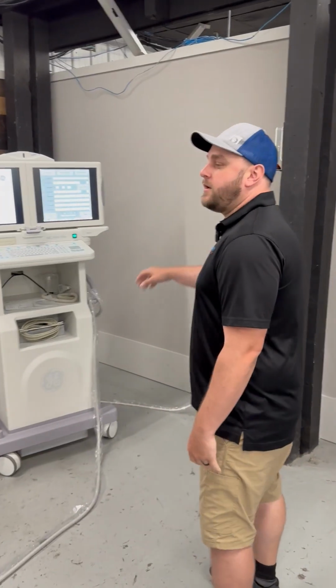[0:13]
Hey guys, this is Matt with Black Imaging, and today I'm going to be showing you how to do a battery replacement on a generator of an OEC C-arm.
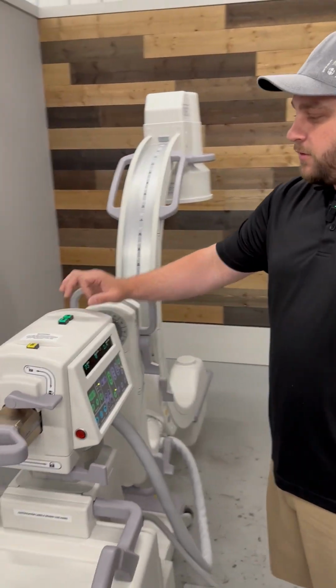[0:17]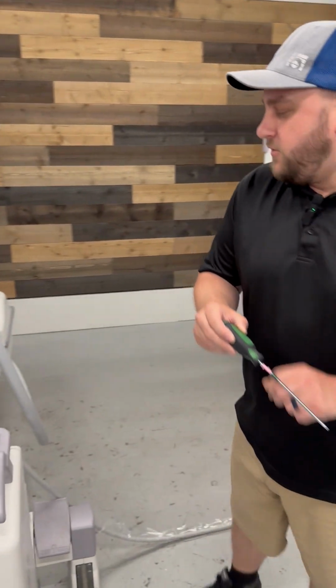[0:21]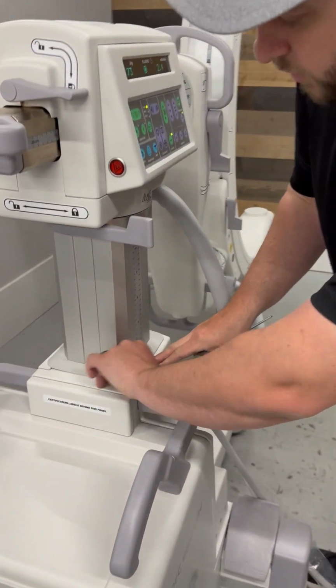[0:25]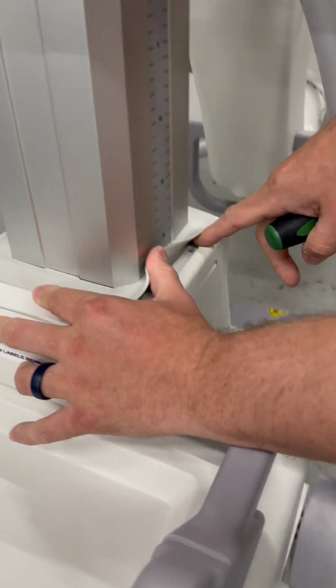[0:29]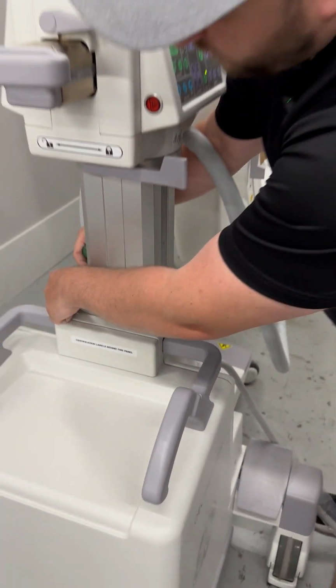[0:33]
With our system on here, to make it easy for myself, I'm going to go ahead and raise my vertical column by pushing the up button, and then using a T20 Torx screwdriver, we're going to raise this rubber seal right here that's hiding two screws on each side, which I've already removed for easy access. Two on that side, and then two on this side.
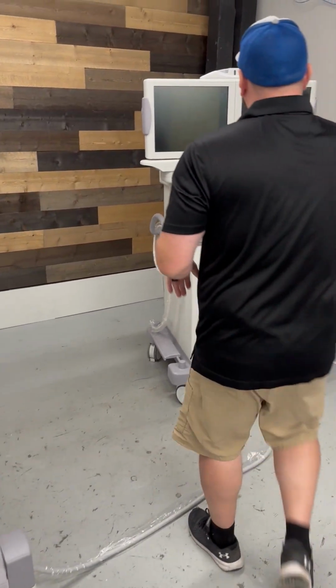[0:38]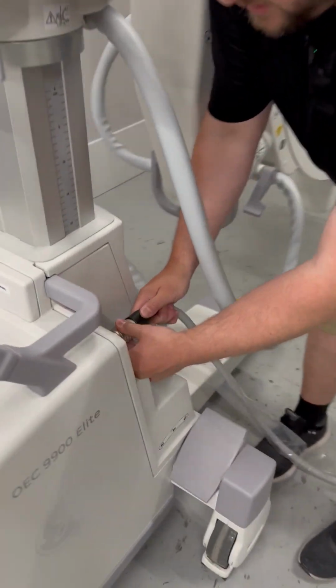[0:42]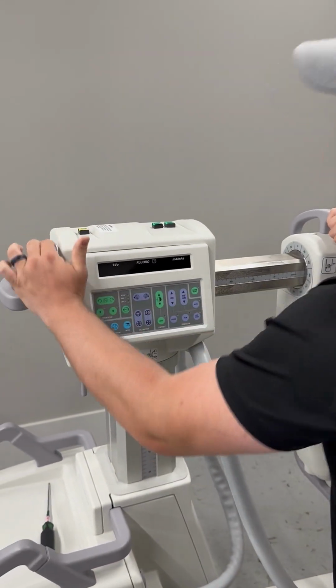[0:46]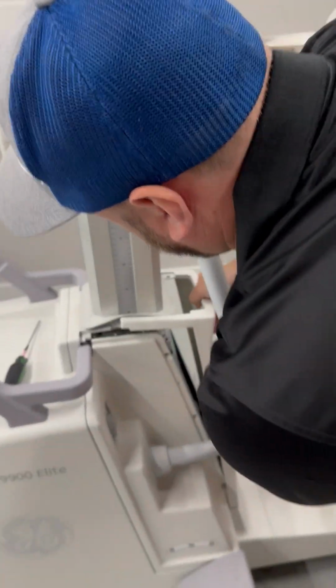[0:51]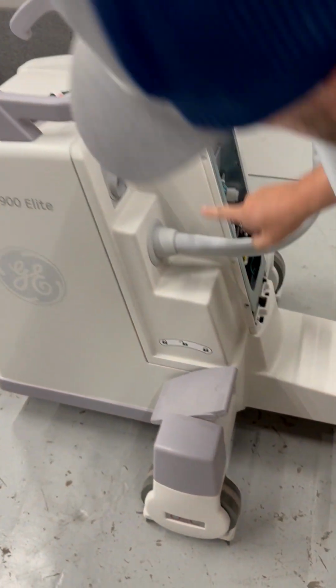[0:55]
Now that I have that removed, we can go ahead and power our system down, and then we'll go ahead and remove our interconnect cable. I like to have my cross arm positioned out in the outermost portion to give me a little more access as I remove this front cover. And then this cover where our interconnect cable goes, there's three screws located here, which I've already removed for ease.
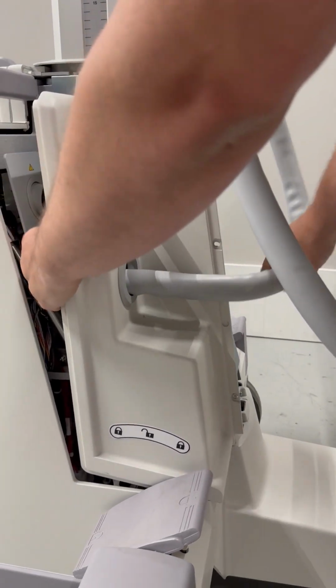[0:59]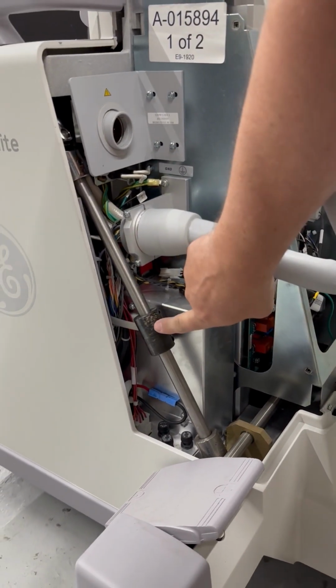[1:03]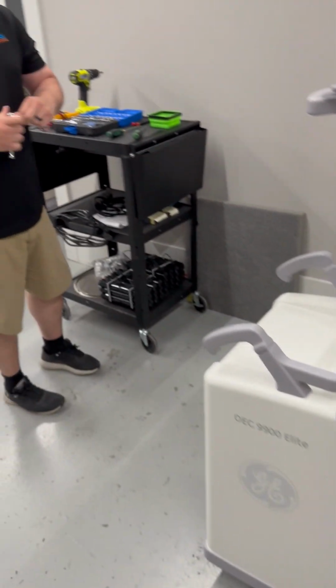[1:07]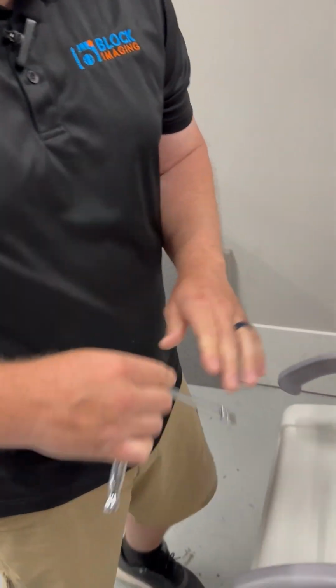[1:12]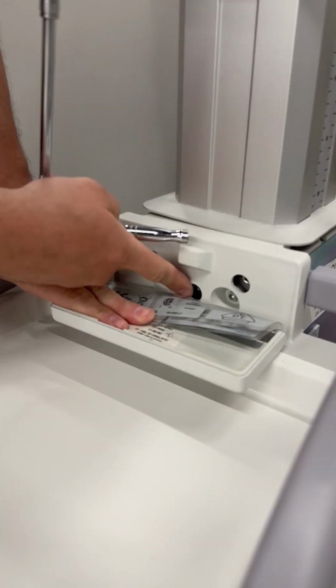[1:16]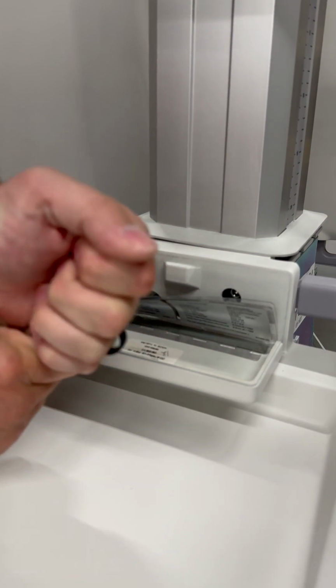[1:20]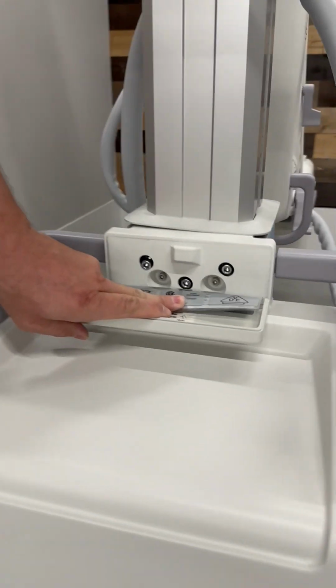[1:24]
And that's going to be exposing our steering shaft here with the knuckle. And then what you're going to want to have is a 1/4 inch Allen. Open up this access panel, and there's three screws located inside here. We're going to want to loosen those up and remove them. Now, I like to keep the screws in there just so I don't lose them. You can button that back up.
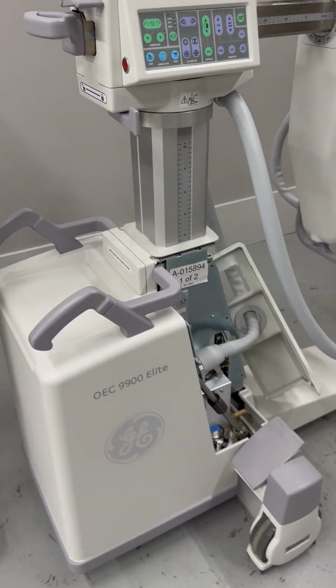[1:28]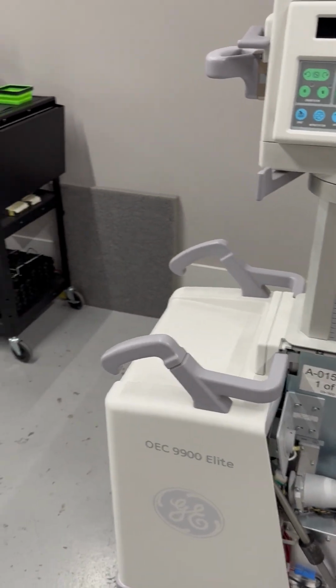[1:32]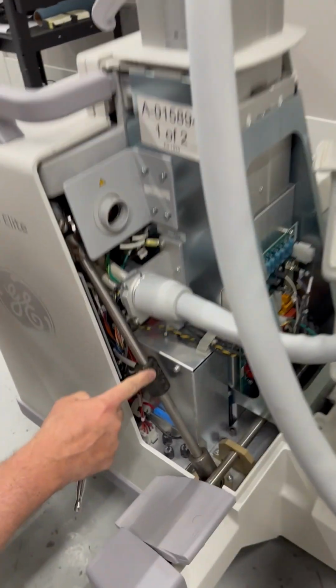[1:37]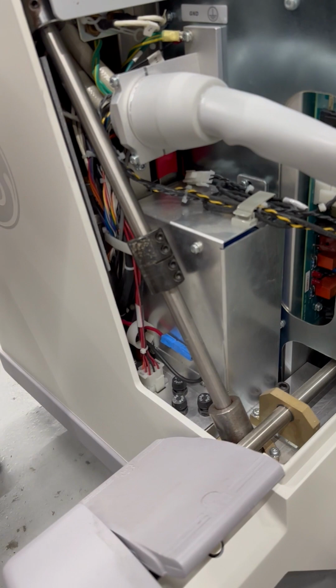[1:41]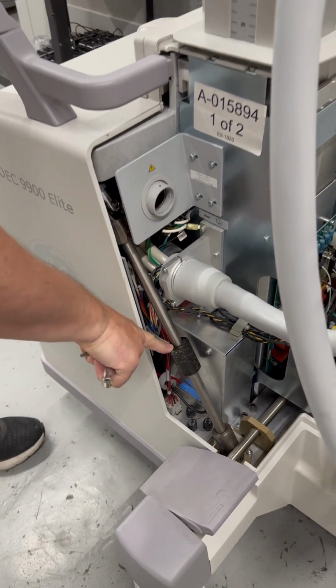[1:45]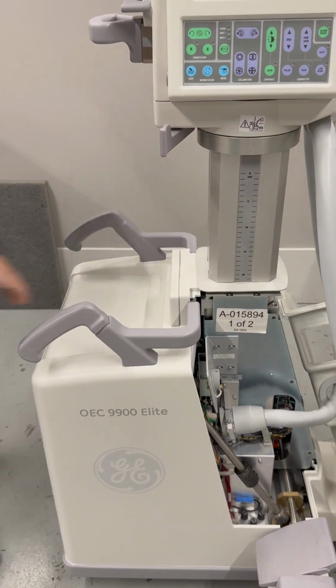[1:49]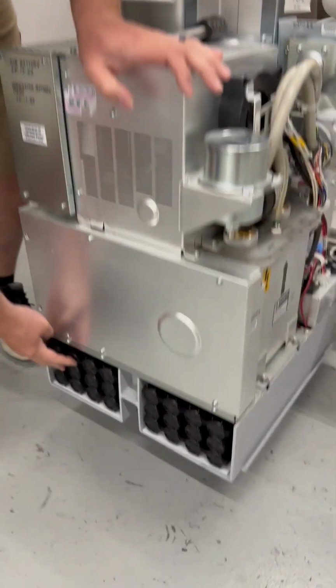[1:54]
Now, where that knuckle is, we will need a 5/32 Allen. And there's four screws located on there. We only need to loosen up the top two. And that should allow us to freely move our steering shaft from the knuckle. At that point, we can pull the generator cover out. And that's going to expose where our battery compartments are.
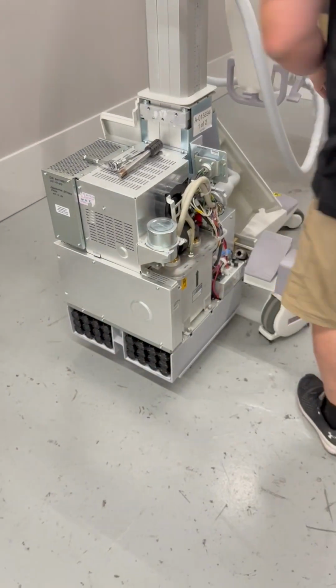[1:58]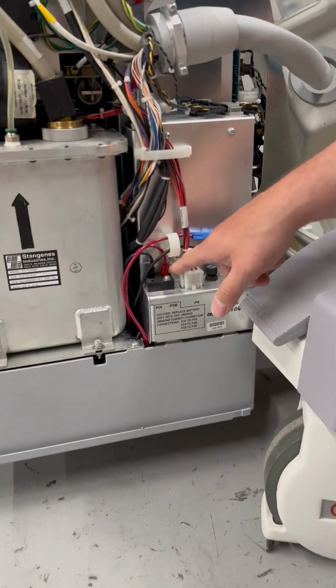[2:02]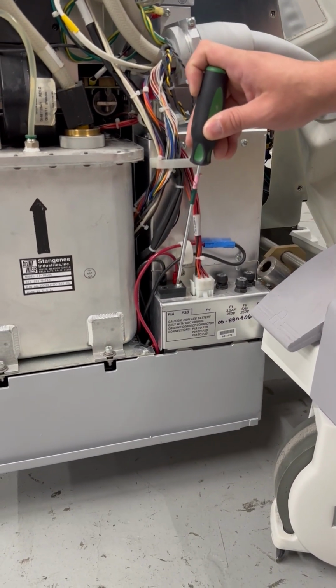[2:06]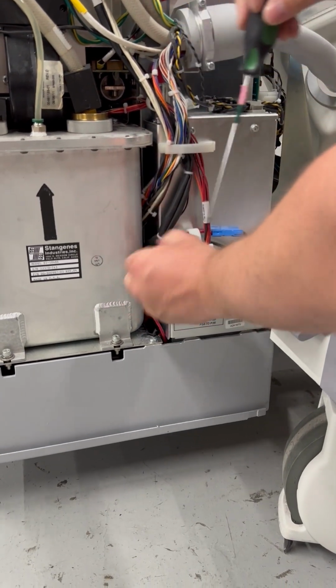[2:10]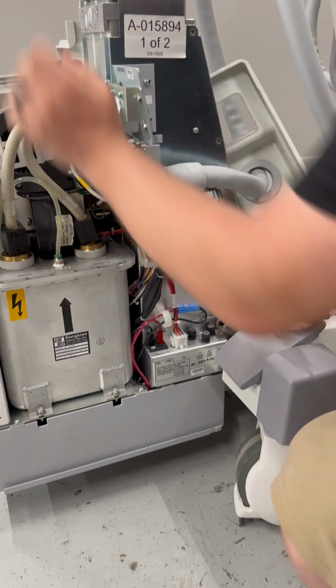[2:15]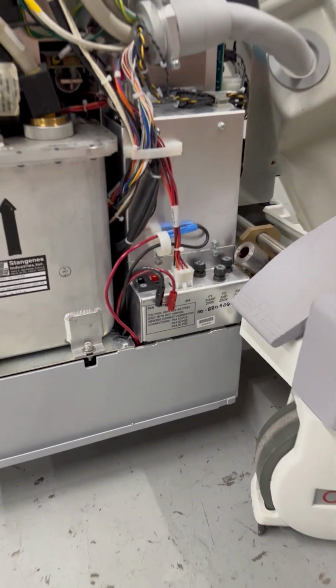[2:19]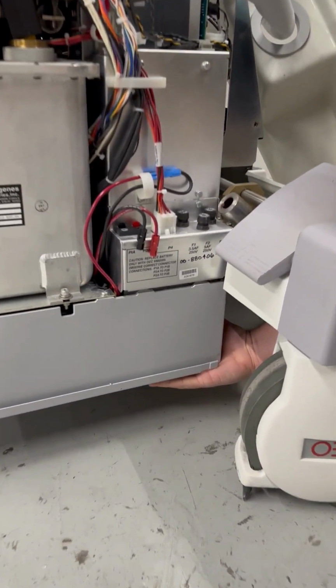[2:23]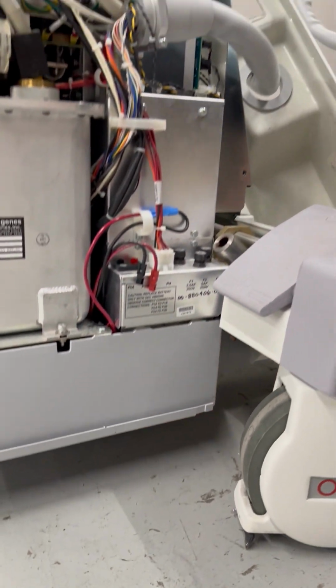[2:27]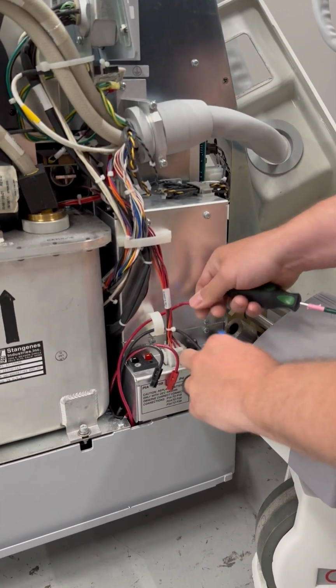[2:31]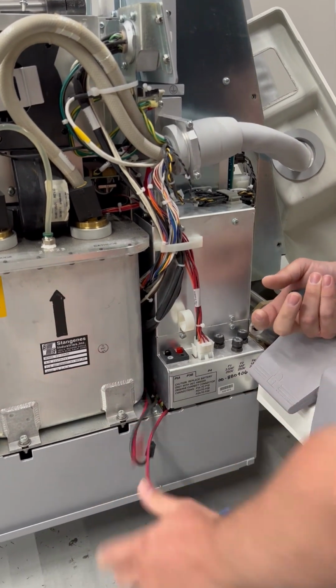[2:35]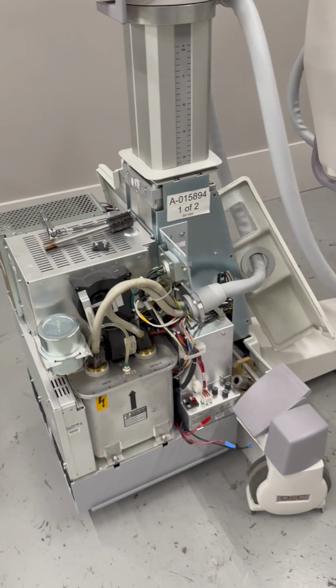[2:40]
You'll have two batteries. On the side here, on your capacitor module, you're going to have where your batteries plug in. There's going to be a retainer with one screw that you will need a T20 Torx screwdriver for. Go ahead and remove that retainer, and you can unplug your batteries. While you're doing this, there is a circuit breaker on the underside that you should turn off. Now all four connections are just connected, and we can go ahead and pull our batteries out.
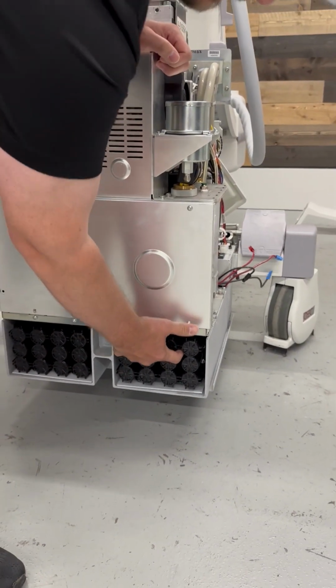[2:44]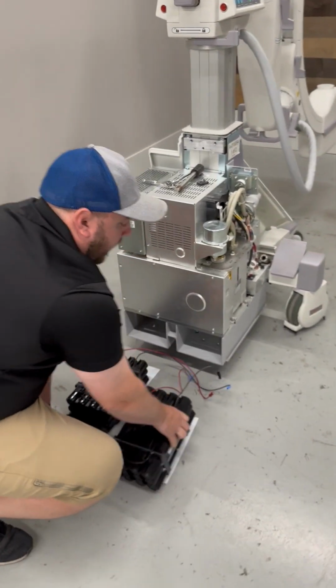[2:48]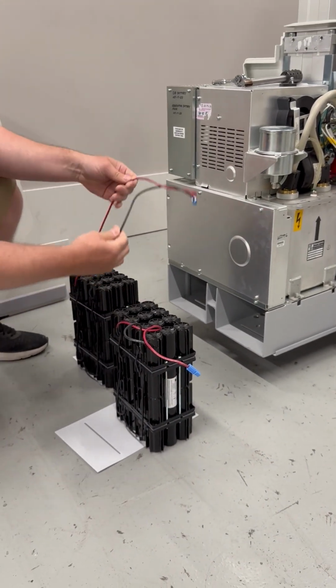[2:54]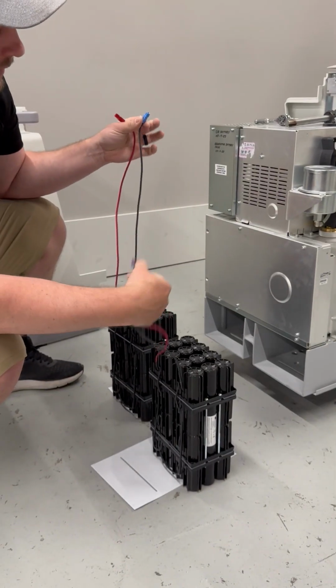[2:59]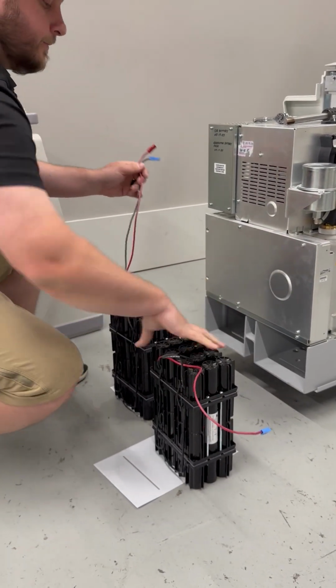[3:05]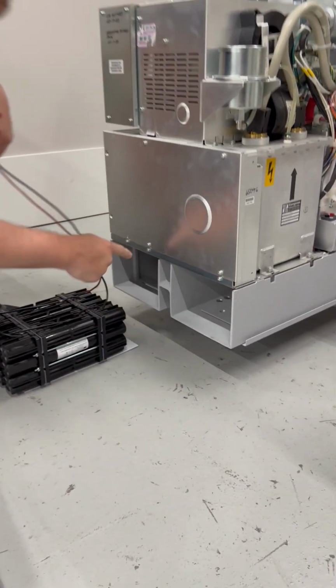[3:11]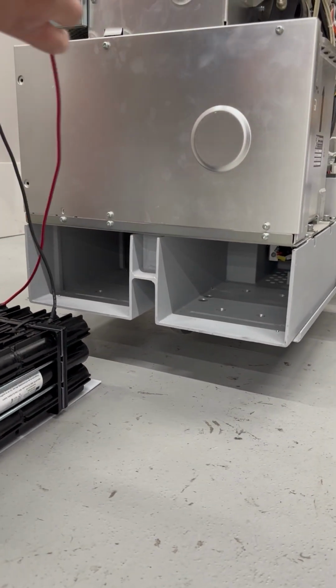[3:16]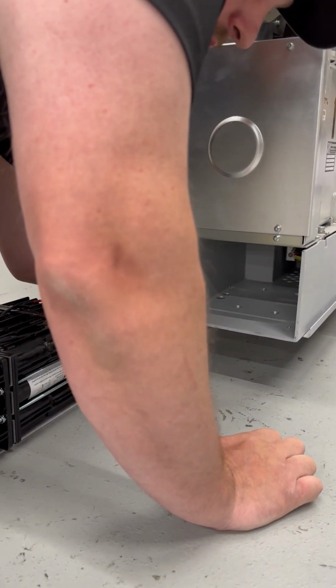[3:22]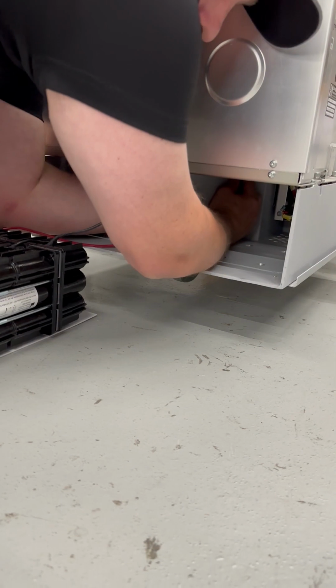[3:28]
Now in this example, I'm just going to go ahead and put the exact same batteries that we just had in there. What I like to do is stand them up to check the lengths of my battery wires. The longer side is going to go on your left cavity, and the shorter side on your right. Now in between these two cavities, there's a pass-through hole that runs from this side over to this side in the very back corner. So what you're going to have to do is take these two long connections and feed them through that hole to be able to pull through the other side.
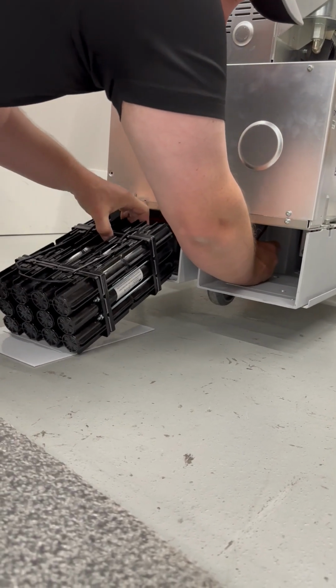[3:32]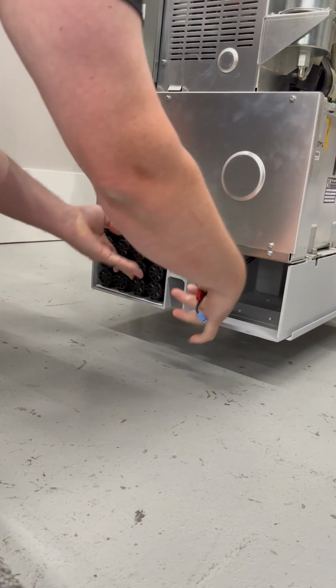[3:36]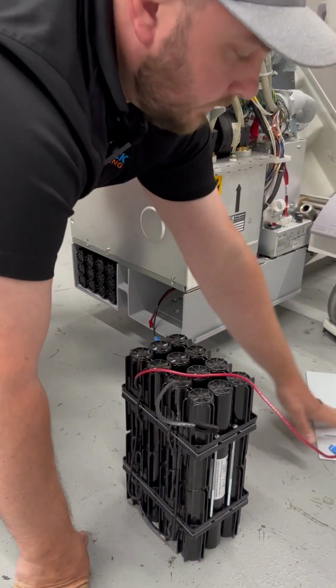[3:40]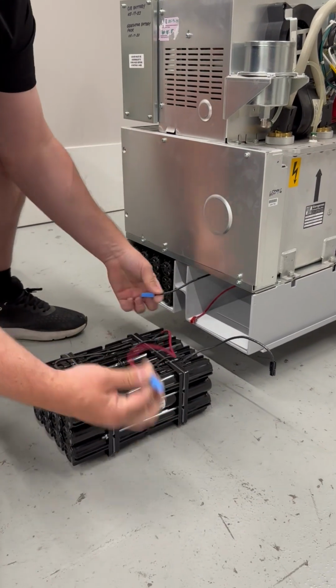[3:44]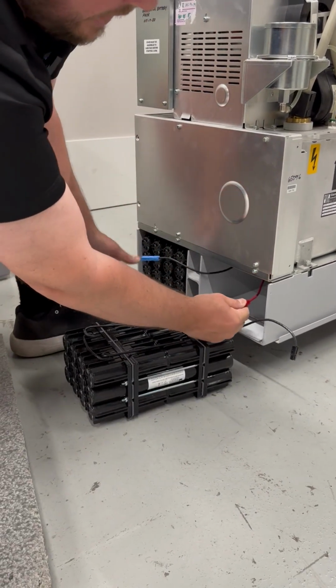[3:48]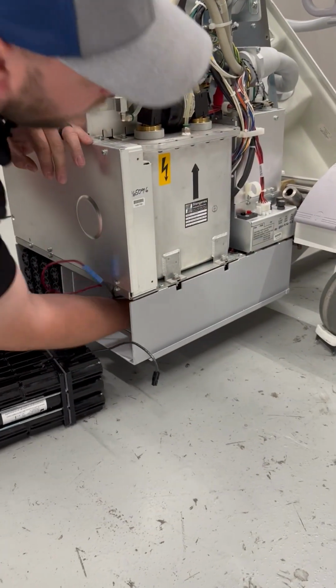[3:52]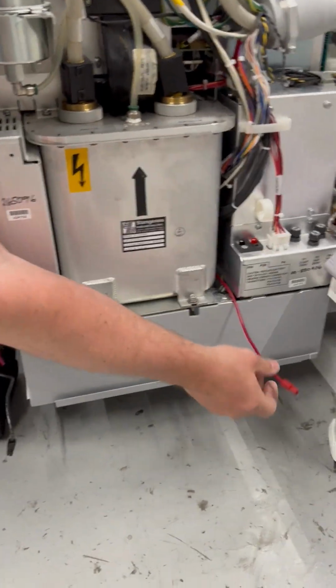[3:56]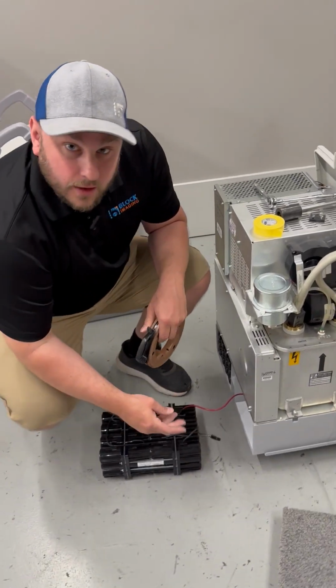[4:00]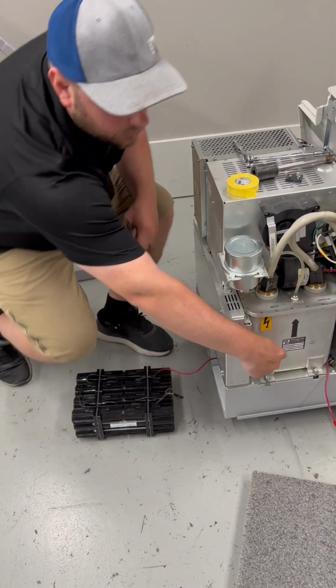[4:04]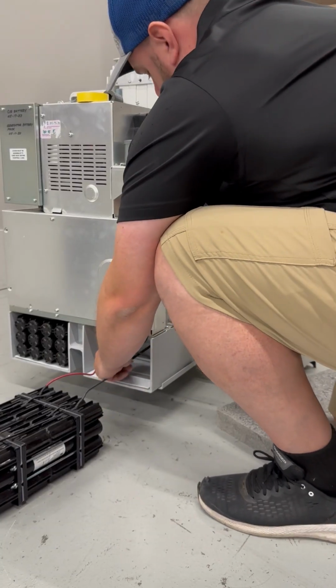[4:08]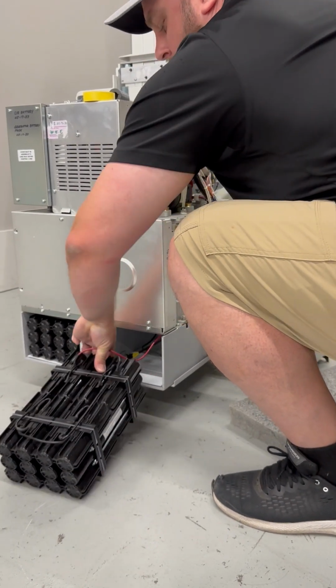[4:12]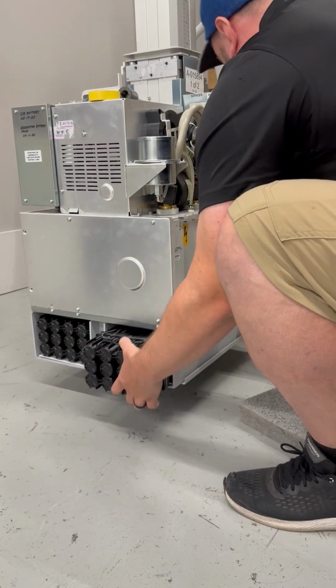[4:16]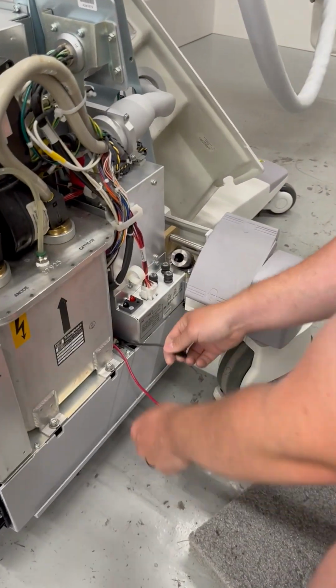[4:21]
Once you have a hold on them, you can go ahead and put your battery back in here. Grab a hold of your connections and work on your right side. You're going to go ahead and connect your blue-red to your blue-black wire. And this red wire that's already in the cavity from the left battery, you're going to pull it back up through that hole where our retainer was. So with this particular battery, it has a shorter black lead, so I'm going to have to put some fish tape through this side to try and pull this wire through. Once you have it taped together, you can pull your battery back up in this compartment, slide it in, pull your wire through there.
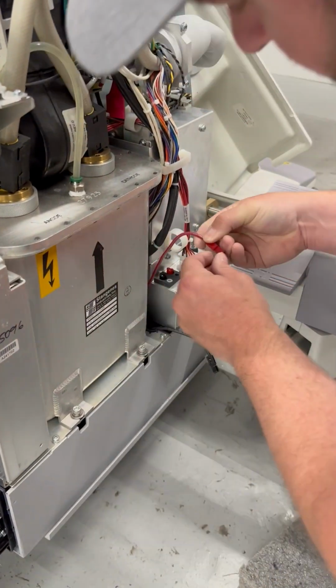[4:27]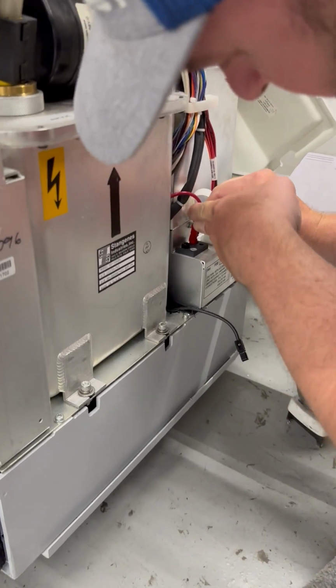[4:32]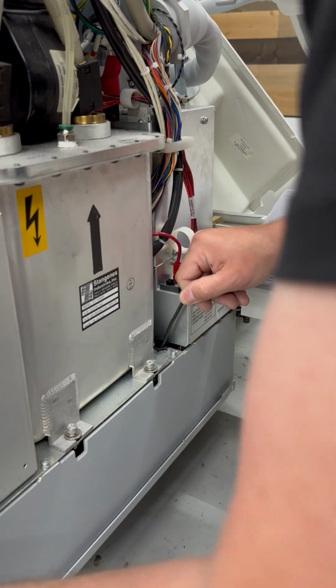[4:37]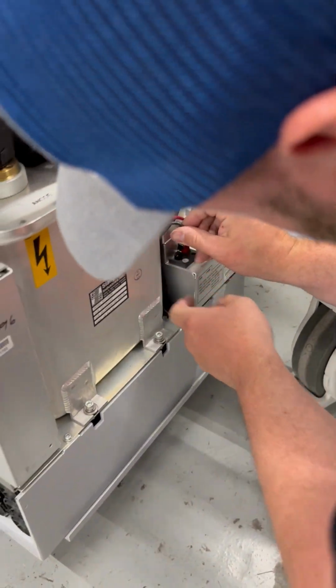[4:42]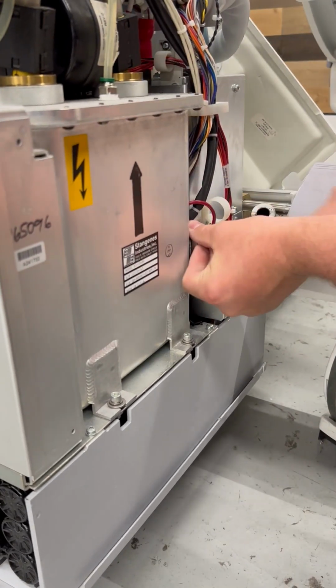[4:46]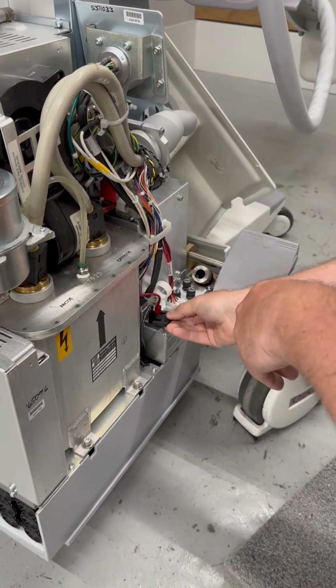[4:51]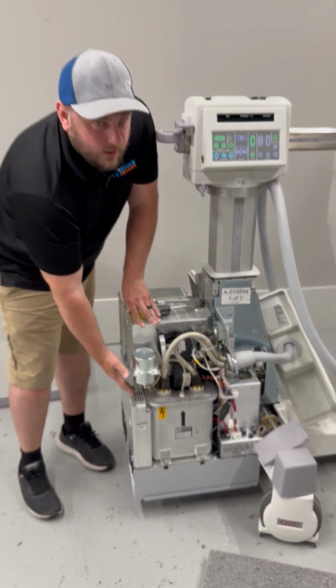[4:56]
And what you're going to want to do is go ahead and connect your red connector on your battery capacitor module. Plug in your black wire. Once you have those both plugged in, we can replace our retainer. Now that completes the physical installation of the batteries itself.
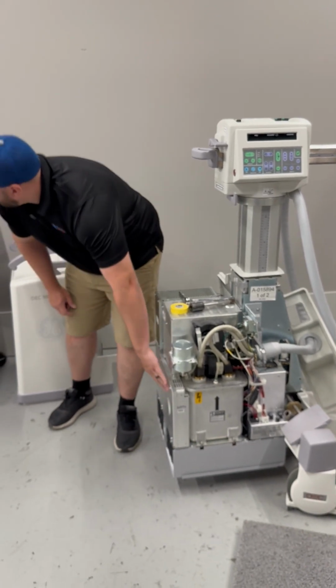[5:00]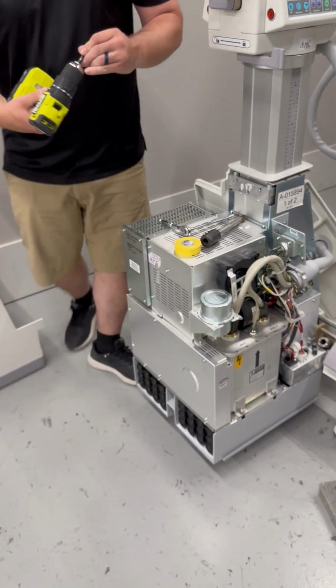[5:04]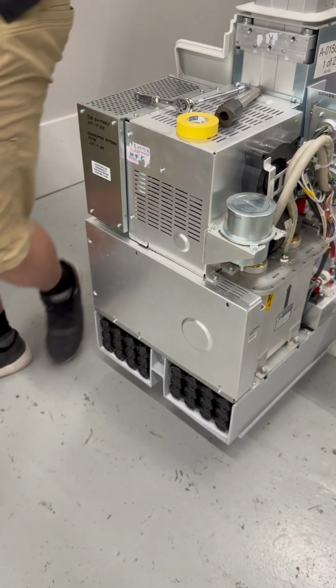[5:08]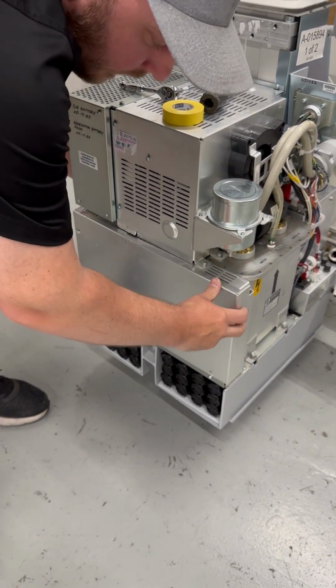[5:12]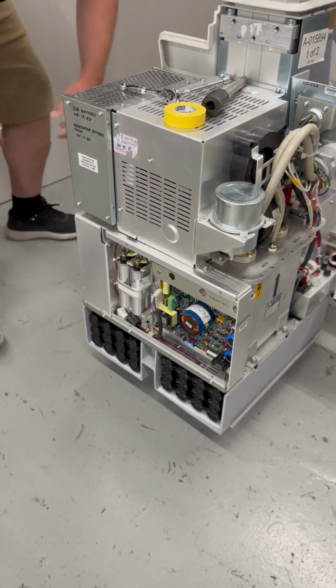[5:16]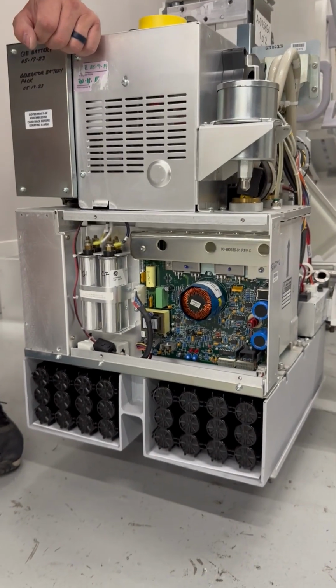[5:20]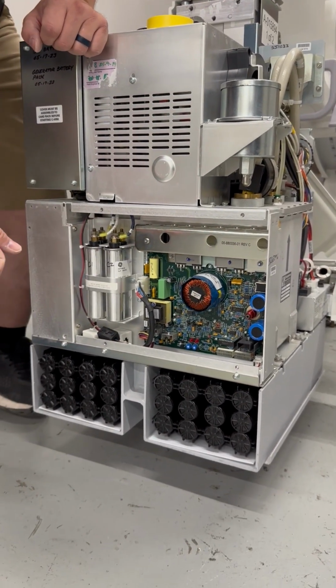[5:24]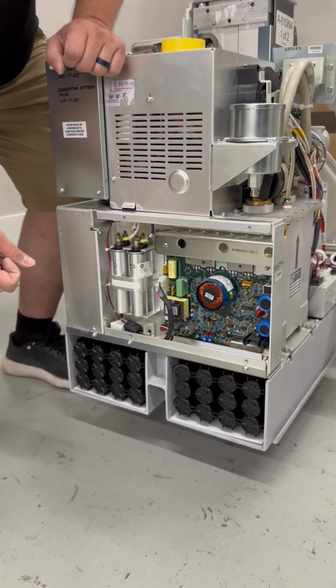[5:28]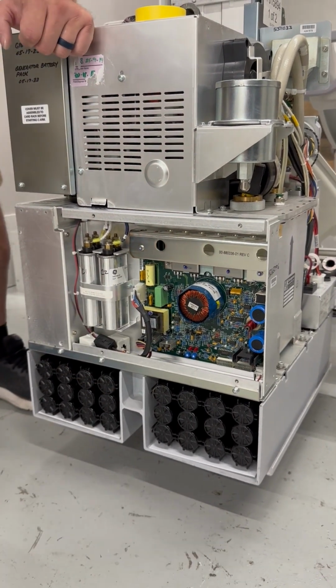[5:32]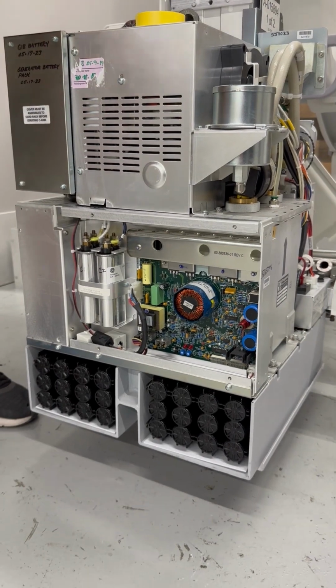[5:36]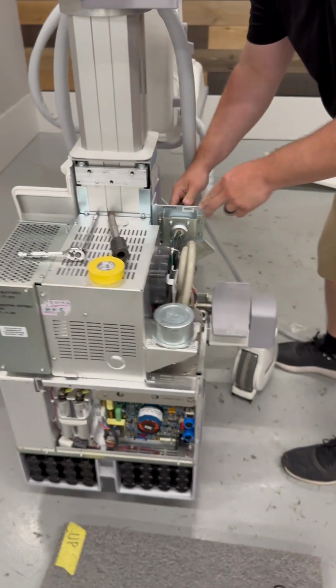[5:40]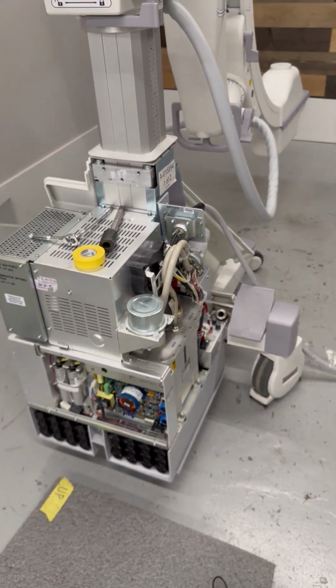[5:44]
Once you have the batteries replaced, you're going to have to remove this cover right here to expose our battery charging board. Once you have all the screws removed, you can remove the cover, exposing our battery charger board. In this particular case, we have a blue battery charging board. There's also a green variety. They calibrate the exact same way. They just have different trim pot labels, and the test point is located in a different spot. Now we can go ahead, reconnect our interconnect cable, and power our system back up.
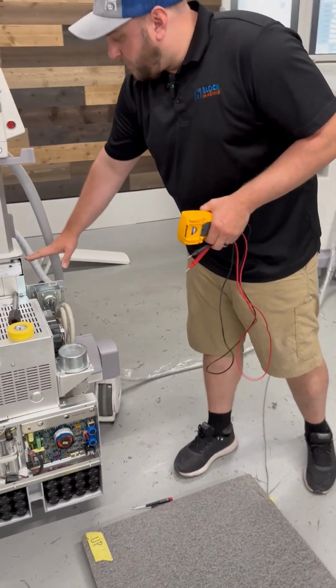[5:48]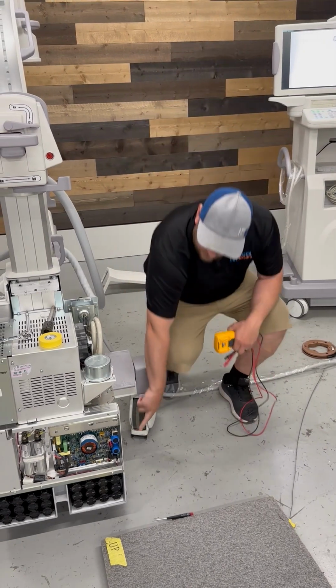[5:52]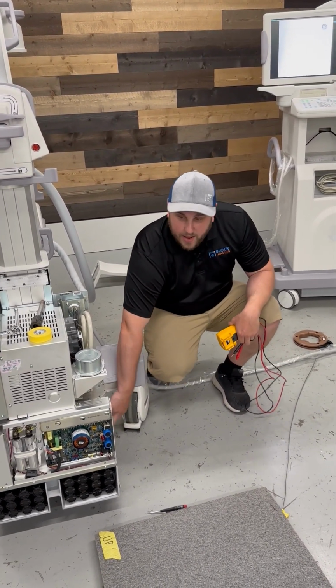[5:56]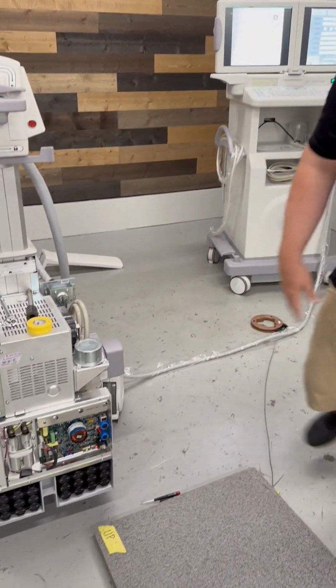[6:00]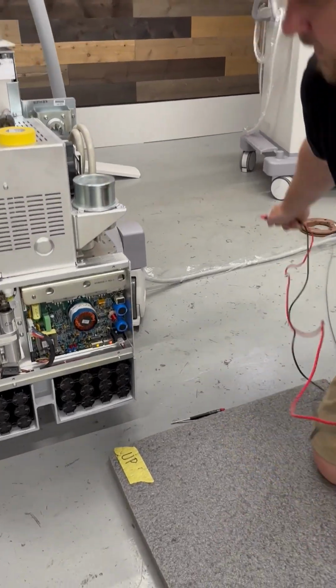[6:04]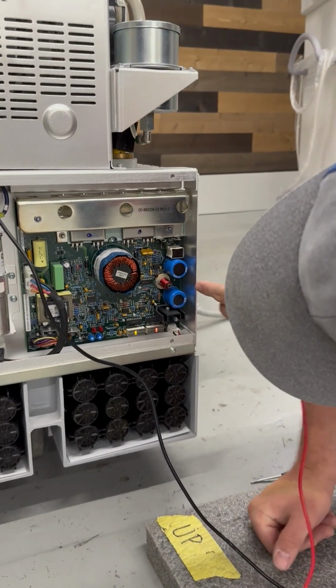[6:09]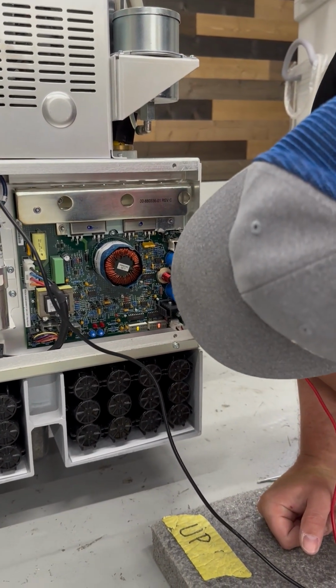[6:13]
Okay guys, now that we've taken this cover off, we've plugged our interconnect cable back in, we're going to want to turn this circuit breaker on the bottom here that we turned off back on, and then we can fully boot our system back up. Now with our system fully booted back up, we're going to want to take our voltmeter. So our test point on this green board is actually going to be TP1 right here in the center on the far right side.
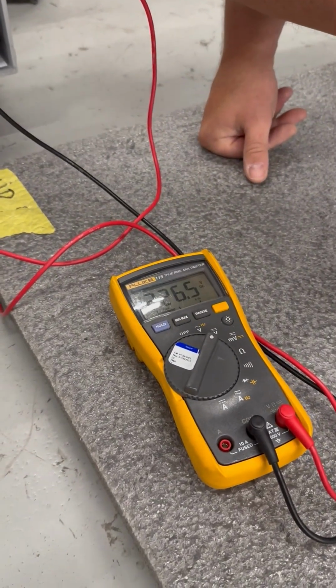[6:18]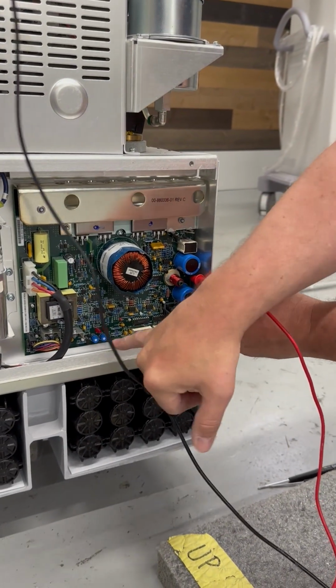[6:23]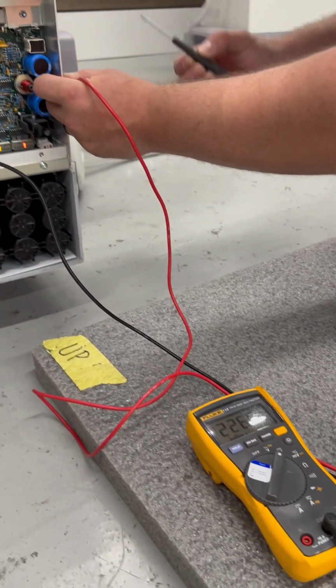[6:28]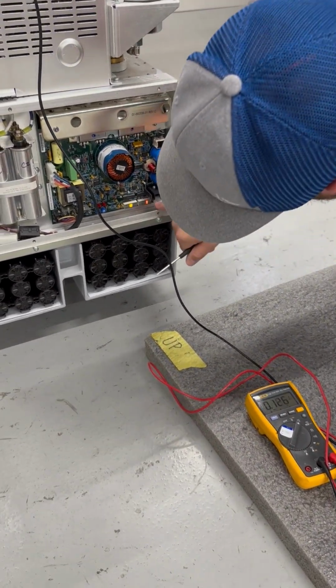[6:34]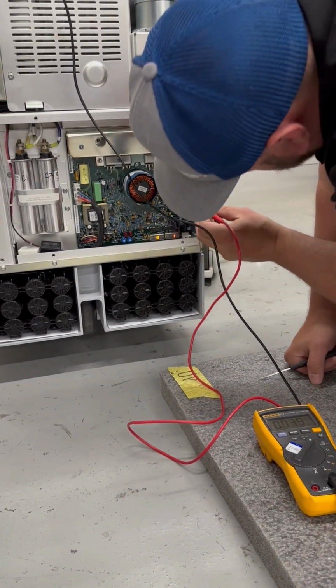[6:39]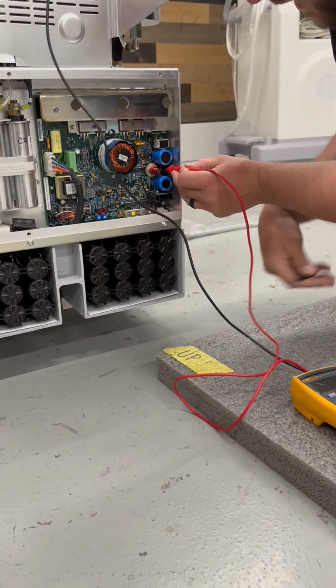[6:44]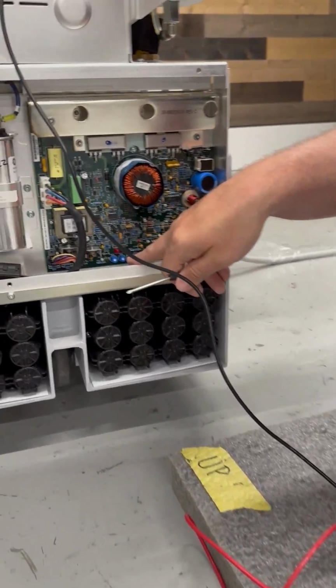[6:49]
And you can see it's set to 226.5. So what we're going to want to do now is our left trim pot down here, we're going to want to adjust this to 230. Once we have it set to 230, our light meter on the right hand side should have jumped to 230. And if it didn't, that's okay because it's 229.9.
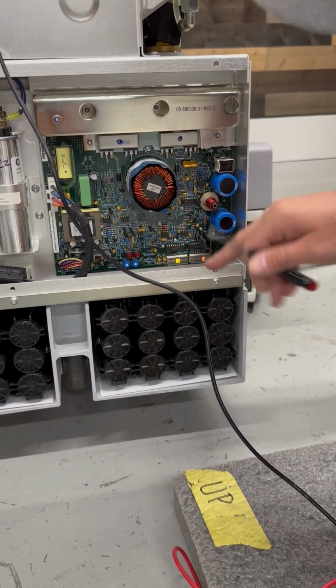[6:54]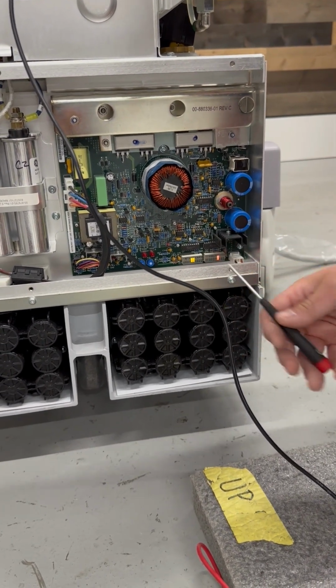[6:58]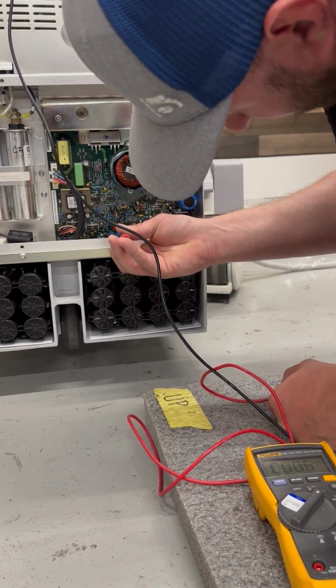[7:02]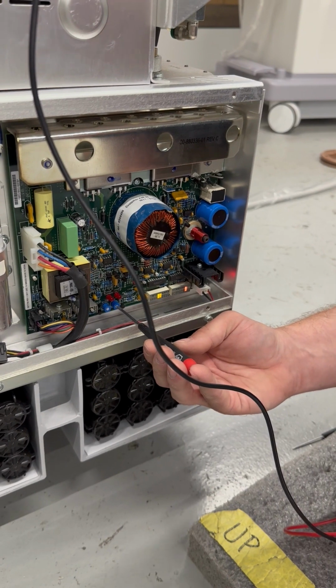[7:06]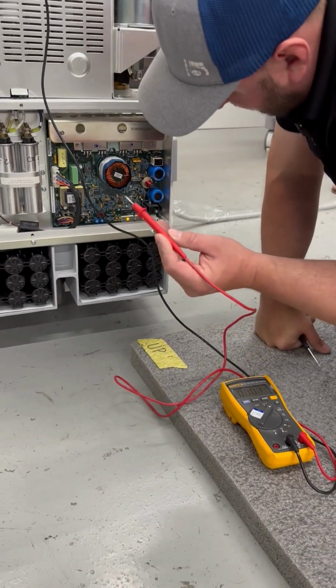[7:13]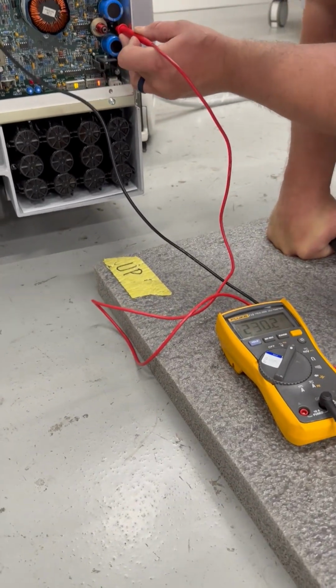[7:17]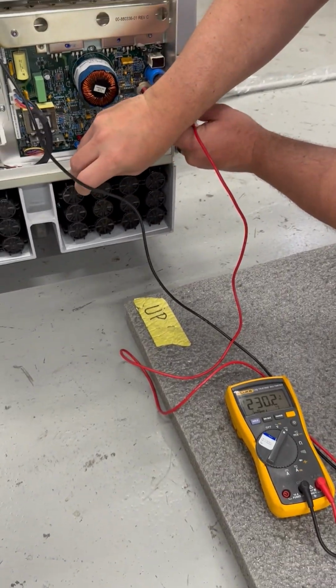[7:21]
Now what we're going to do is our trim pot on the right hand side, we're going to adjust that so then our light bar drops from 230 to just clicks back over to 220. Now in this case, it didn't jump to 230, so we're going to move it to 230. And then once it's on our 230, we're going to dial it back down until it just clicks to 220. Now we're going to take our lead on our voltmeter again, put it back on our TP1, and adjust it back down to 225 volts, plus or minus 3 volts.
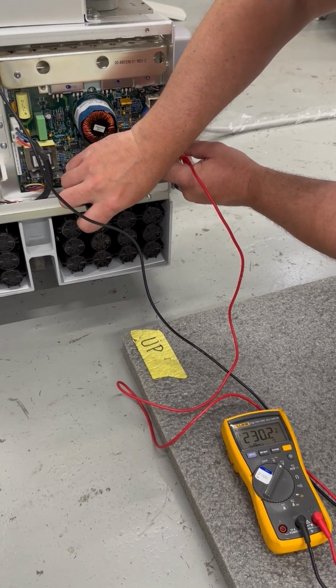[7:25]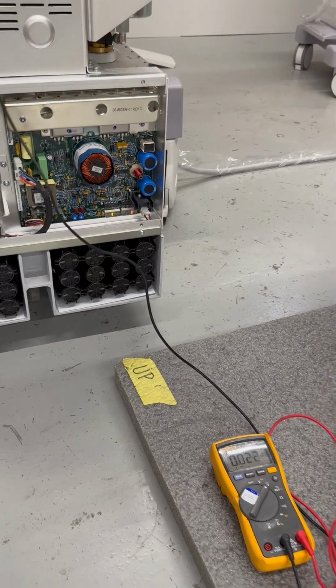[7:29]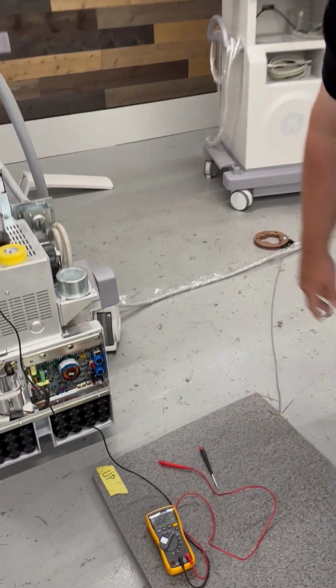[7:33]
Now once you've done that, you can go ahead, you can power your system off, and you can replace all the covers. All right guys, that completes our battery replacement and our battery charger board calibration. This process can be done on a 9800, a 9900, and an OEC.